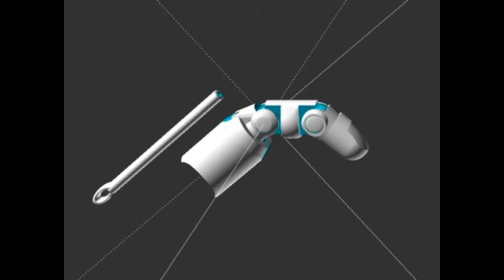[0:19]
Hi everybody, I'm Emily Thompson, and my primary role this semester for our project was to manufacture all of our iterations for the prosthetic finger. Our initial idea was to design and build an above-the-knee prosthesis. However, through additional research and some discussion amongst the group, we decided it was a little too big and expensive for our iterative design and manufacturing process.
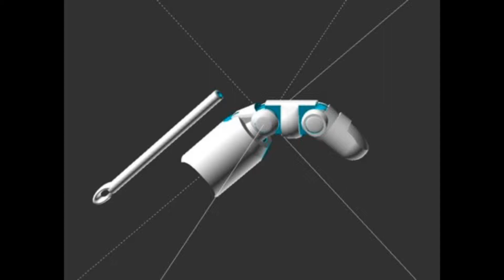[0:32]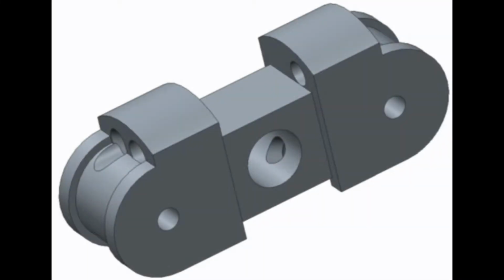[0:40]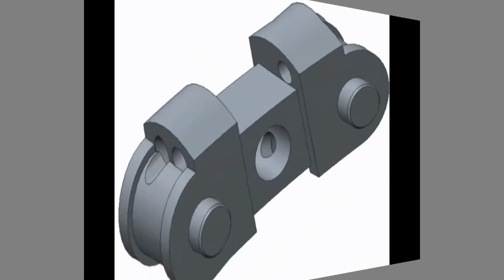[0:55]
So along the same lines, we came up with the idea of doing a prosthetic finger, and we knew that the small size of the finger would allow for ease of that iterative design and manufacturing process I previously discussed. We also knew that this gave us the opportunity for design enhancements to both the finger and the wrist harness. So overall, the purpose of our project is to create a prosthetic finger design with a natural feel that is lightweight, flexible, strong, comfortable, and most of all affordable.
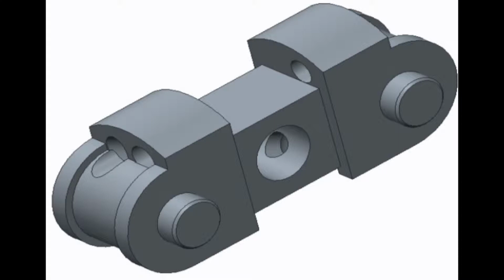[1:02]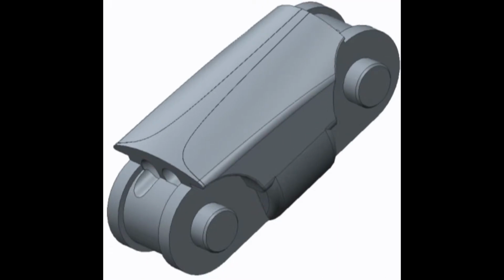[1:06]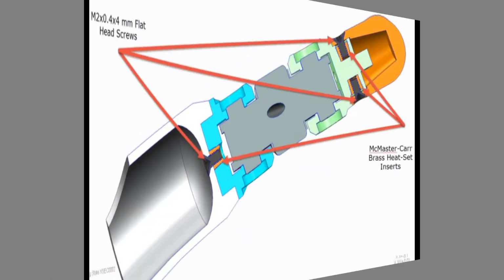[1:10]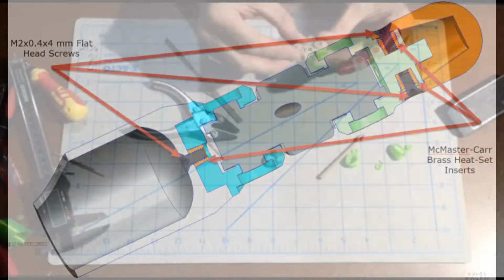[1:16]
And that brings me to the goals of our project. First, we wanted to consolidate the parts. What we found on Thingiverse had a few different STLs that would later be assembled, so we needed to consolidate those to meet our project requirements. We also wanted to reduce the post-processing time. The Thingiverse STLs required some sanding, filing, and drilling, so we wanted to tidy that up.
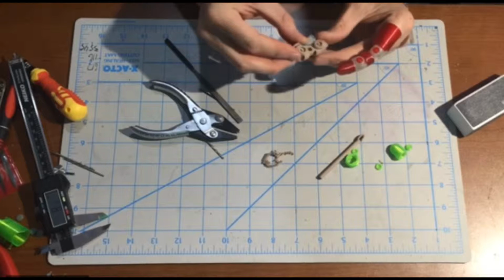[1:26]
We also wanted to create customizable attachments that provide additional functions. And we also wanted to introduce a new harness design that increased leverage and reduced pressure on the hand when going through the natural movements of the finger.
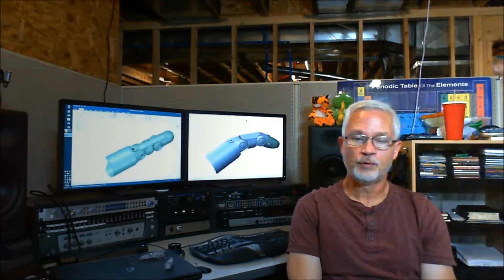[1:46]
Hello, my name is Steve Stumbo. My part in this project was centered around the design process. So we pulled the original idea from Thingiverse and brought it down with its STL files. And as I was playing with these files in a variety of different software packages that were suggested in the class, it became evident very fast that we were dealing with STL files with a huge number of errors.
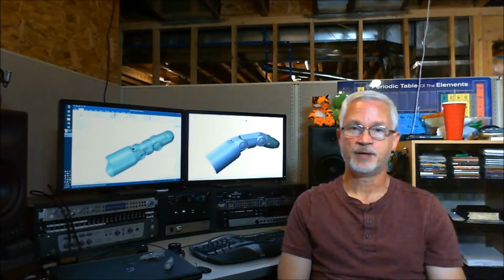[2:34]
I think one of the parts of this assembly had over 300 errors in it, and I was just struggling with trying to figure out these software packages to try to fix these errors. So we made the decision fairly early on that we would go ahead and redesign the whole finger, actually redraw it in Creo. And so as we did that, we came up with our design improvements.
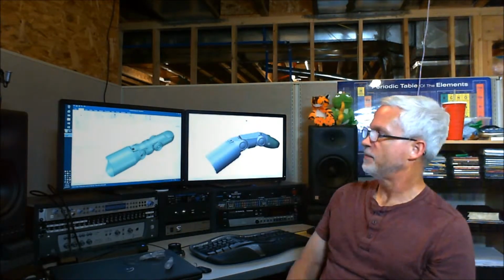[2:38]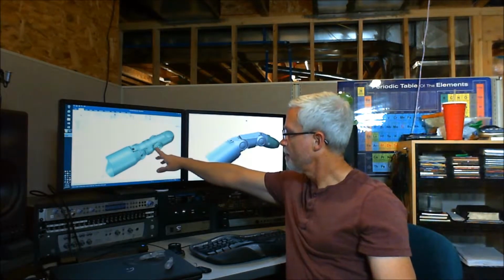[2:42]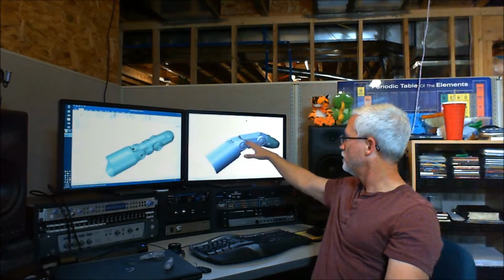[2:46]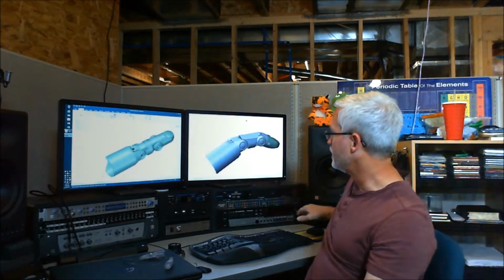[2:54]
It's hard to see from the picture here, but you'll notice that this middle section of the finger is made up of a couple parts. We integrated that all into one piece on this side over here, and we also did some better smoothing and blending in the design to make it look better. Probably the biggest key piece that we did that was different than the original design is
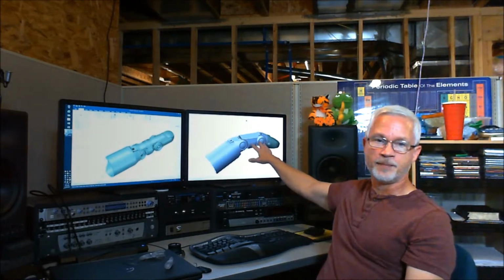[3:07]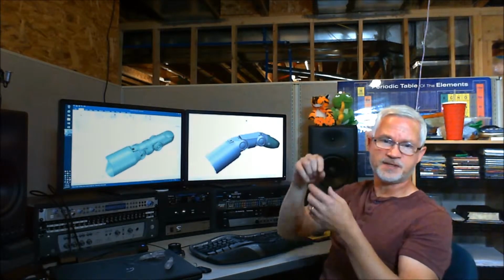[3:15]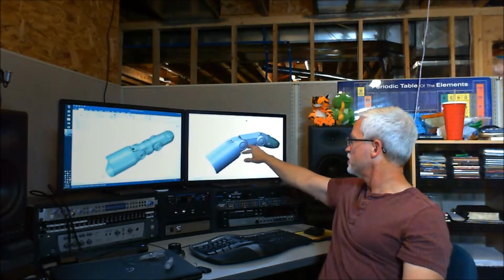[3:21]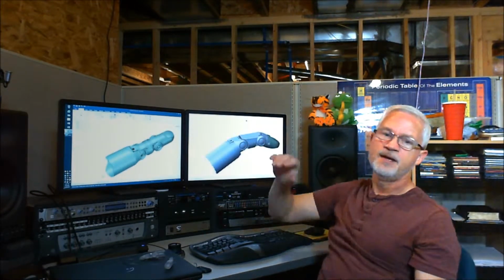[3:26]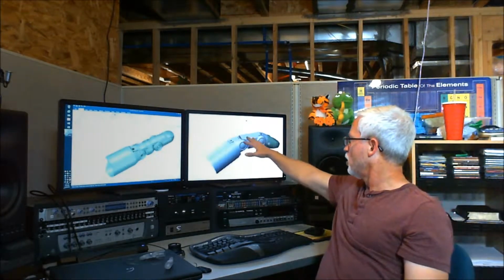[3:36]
in order to meet our articulating finger requirement of 2 joints, we took these 2 specific joints here, and in the original design they used metal pins that were assembled after the fact. And we said, no, we're going to create this main middle section, which is made up of 3 parts here, minus this socket and the finger, and we integrated that all together. So we got our 2 articulating joints out of that that were printed at once, and then we were able to sculpt and combine this middle section part into one single part as well.
So at the end of the day, we reduced the number of parts. It did take significant time to redraw this. I think it was mentioned in class that it's really difficult to take somebody's design that's an STL and back out all the dependencies of how that was made and so on, and that was very true. I basically started from scratch here.
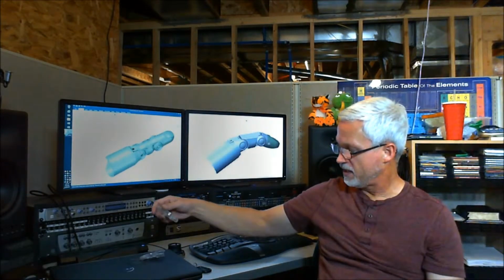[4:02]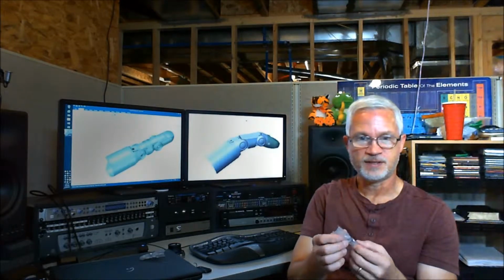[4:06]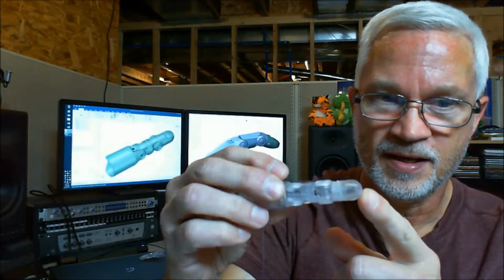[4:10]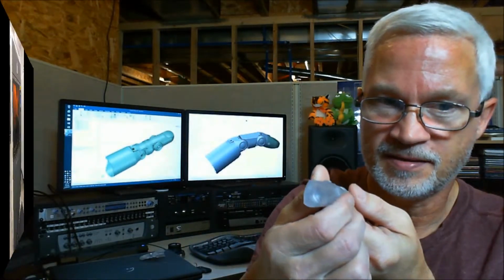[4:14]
The one thing I will say is we did integrate 3 threaded joints in this design, and I'll try to get up here in the camera. You can see in there that those screws show, and then the one in the base is in here as well. All the finger components were printed in the Projet 7000 by 3D Systems, so that encompasses the fingertip, the articulation component, and also the finger socket.
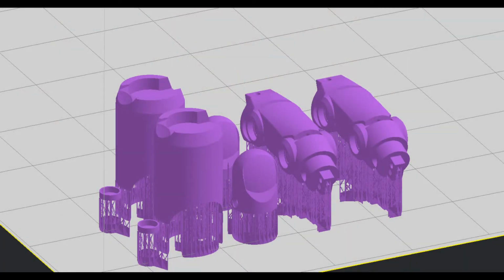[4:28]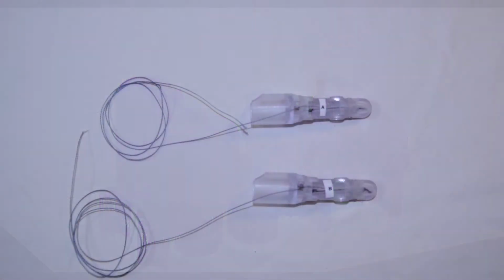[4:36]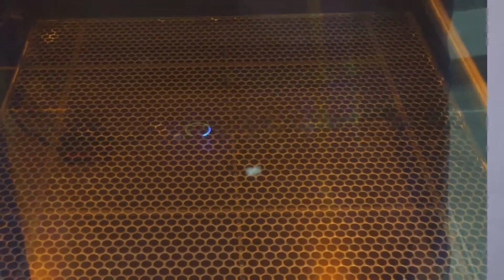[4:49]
This is done with an SLA process and was printed in a plastic material that is clear in color. We thought it would be kind of neat to see the inner workings of how the finger flexes and extends by all of the wires and cords running through and across the knuckles. This Projet 7000 is especially good for use in prototyping. It prints with fine feature detail with accuracy of up to plus or minus 50 microns.
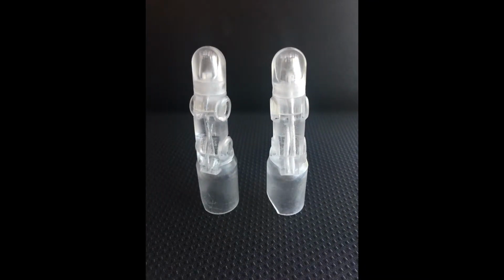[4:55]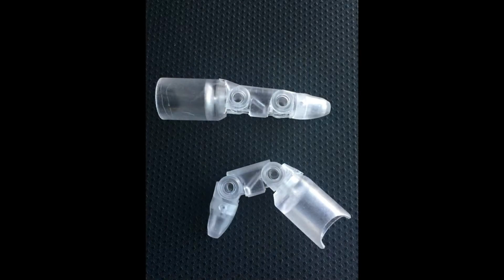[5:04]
We built our finger in 100 micron layer thickness, so that accuracy is about half the layer thickness. Our build duration ended up being about 4 hours and 15 minutes, and this was for our final finger plus a duplicate just in case anything may have happened in transit or in assembly.
My name is Lance Yellowhorse, and I was in charge of the palm harness design for our prosthetic finger.
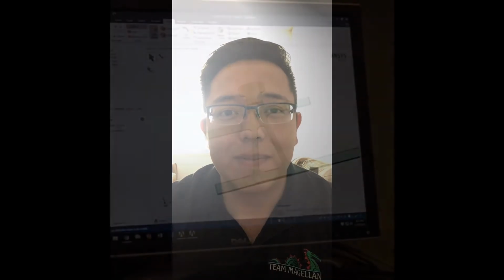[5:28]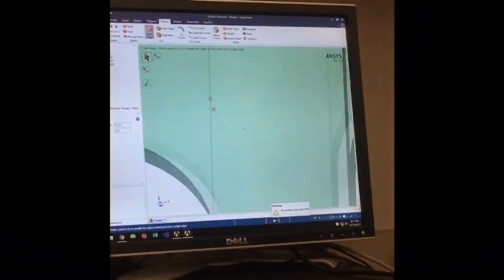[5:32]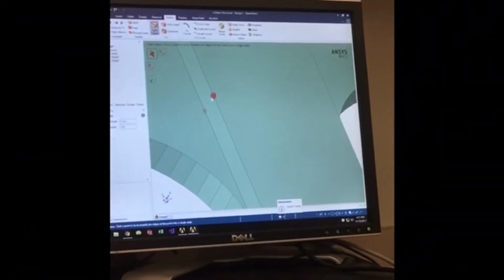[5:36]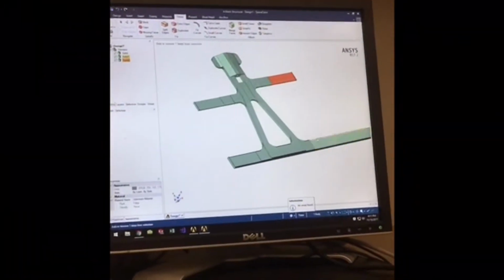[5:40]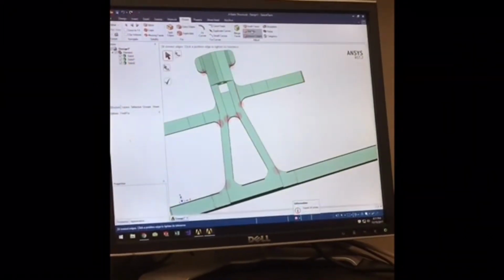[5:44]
Today we're going to talk about the CAD revisions, .stl mesh repairs, the slicing, printing, post-processing, and assembly of our palm harness design. The palm harness was an original .stl file created by Swoozle on Thingiverse. Our goal was to modify the palm harness for comfort, adjustability, strength, as well as support for the articulation of our prosthetic finger. The .stl was originally a mesh file that was converted into a solid body.
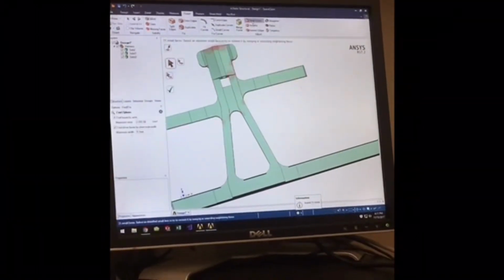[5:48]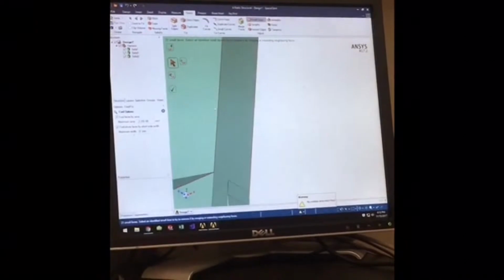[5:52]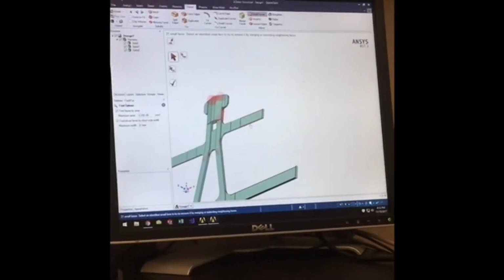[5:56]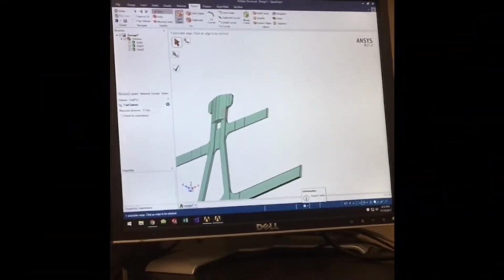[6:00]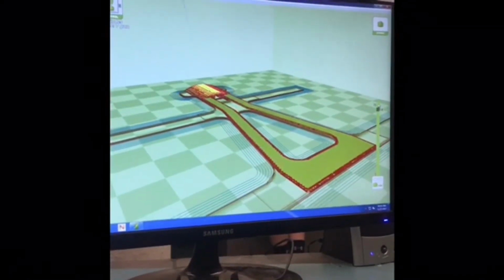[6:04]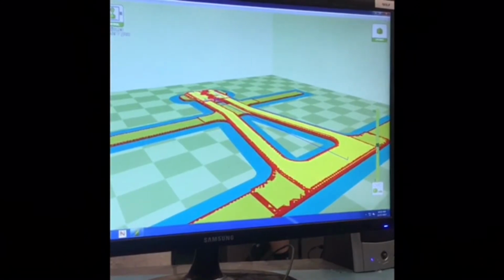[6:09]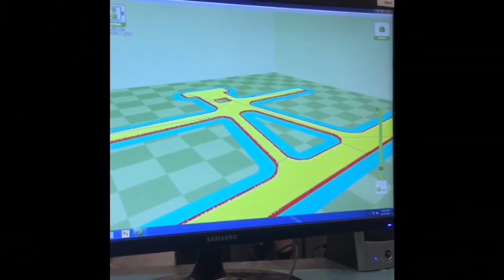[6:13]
70 errors were repaired using ANSYS's SpaceClaim. This video shows errors including split, duplicate, and inexact edges, as well as missing faces. Once the .stl file was free of errors, modifications were made to elongate the straps for strength and adjustability of the buckles. The file was then uploaded into Cura's slicing and printing software, where a brim was applied to assist the bonding potential between the bed and the nozzle, and each layer is examined for quality.
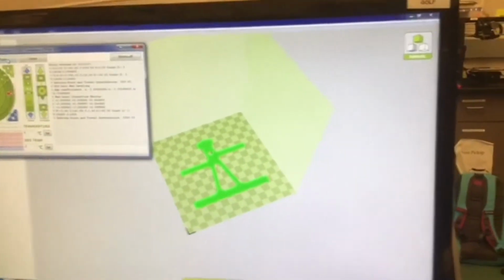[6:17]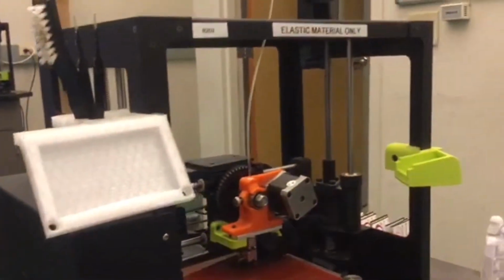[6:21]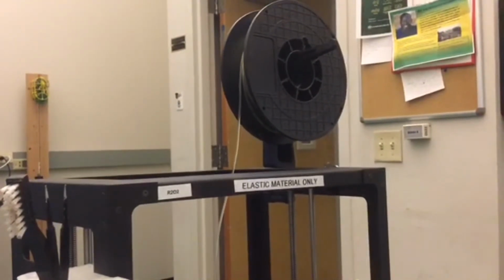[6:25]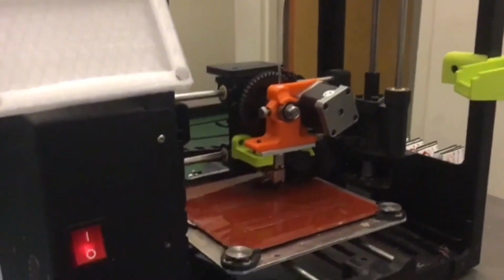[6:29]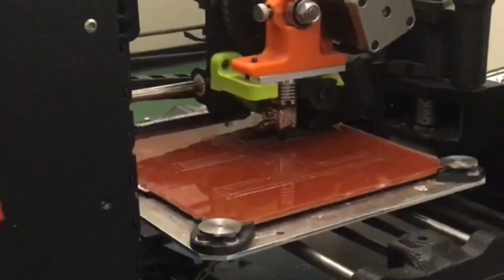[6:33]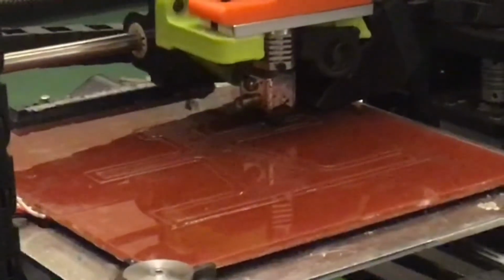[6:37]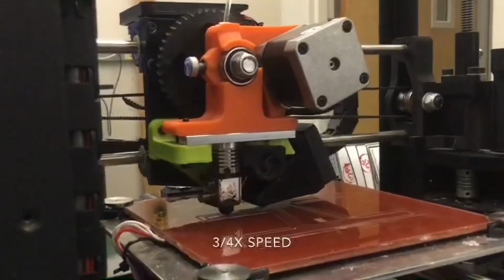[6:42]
Now that the palm harness fits within the build volume, the print is initiated on the Idea to Product Labs R2D2 Flexi extruder, and we can see the NinjaTek SemiFlex TPU flexible filament being fed into the RAM extrusion head. This controls the feed rate, material state, and precise movements relative to the bed. The goal was to accurately maintain the size and shapes of the rods, maintain convection and conduction, as well as monitor the position and control of the printer.
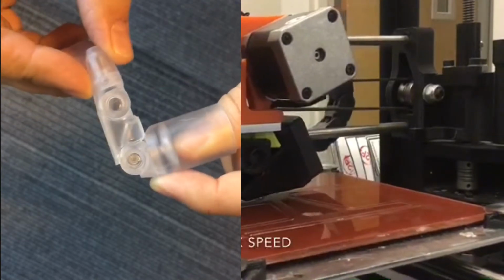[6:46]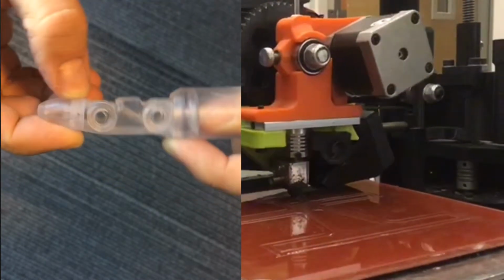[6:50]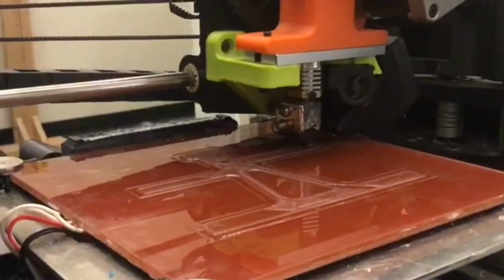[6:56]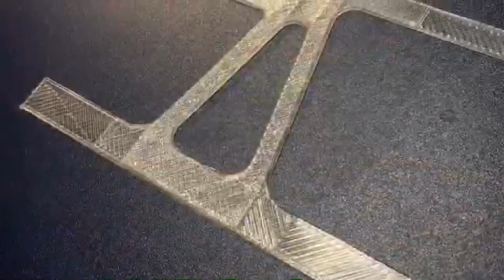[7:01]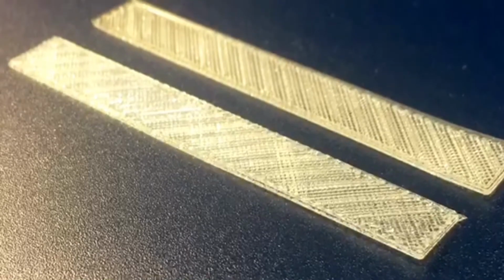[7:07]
We chose this printer due to the reduced cost, 20% infill providing structural rigidity, and flexible material capabilities, soft feel, and ability to withstand high tensile strengths. The palm harness is designed for the right hand and can be modeled for the left hand as well. The video shows a square opening where the anchor block will be applied. I will talk about this part shortly. These images show the final part quality of the palm harness, and the same process was repeated for the wrist straps as well as the palm straps.
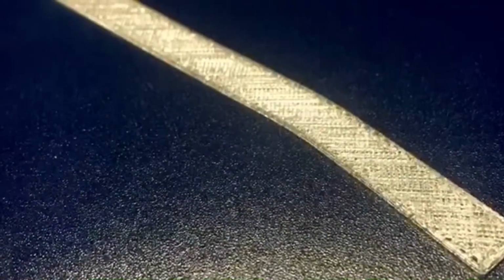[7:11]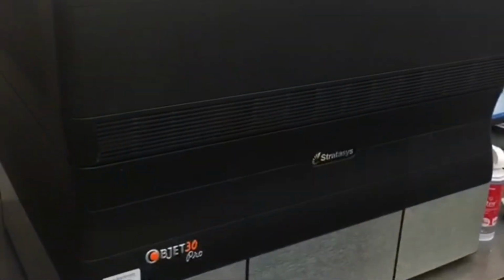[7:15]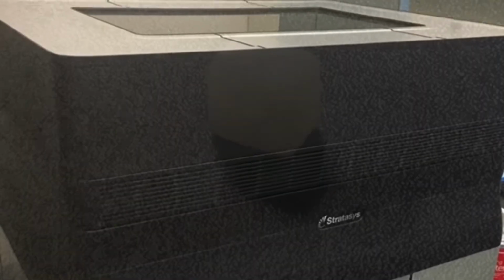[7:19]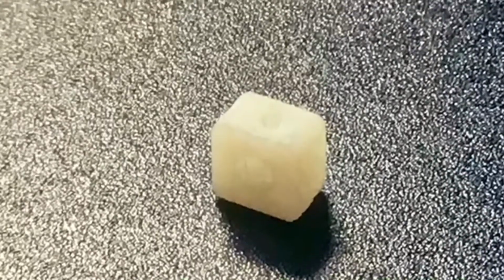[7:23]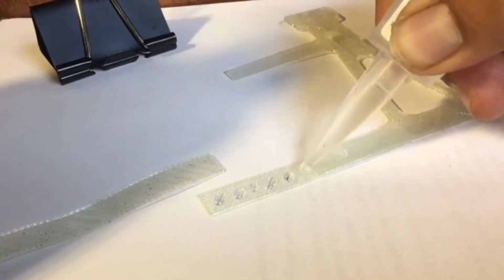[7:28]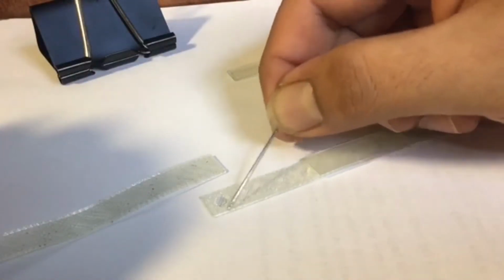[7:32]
The anchor block was created using the Idea to Product Labs Stratasys Inkjet Objet30 Pro using RGD450 and simulated polypropylene, giving us a tough, small, precise anchor block that will anchor our tendons. For assembly, a design change was utilized using Loctite superglue to bond the straps together in place of soldering, which will create a weaker joint.
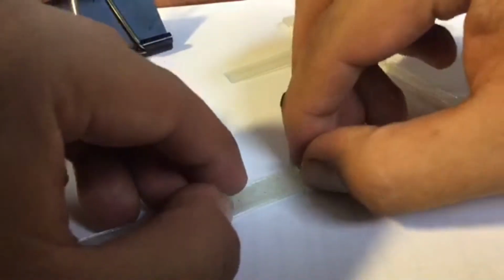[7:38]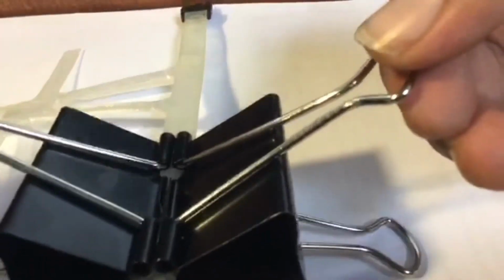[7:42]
The straps were designed to have rods facing rods to increase surface area, adhesiveness, and visual presentation. The straps were fit into position and clamped during the curing settings. This same technique was repeated for the buckles. This is how our palm harness was designed.
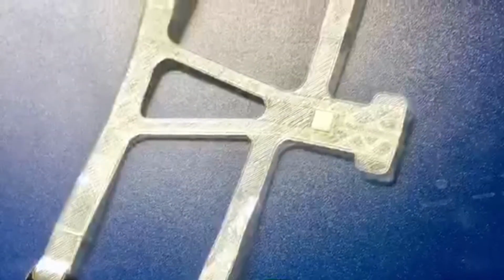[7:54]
Hi, my name is Justin Felix, and my portion of the additive manufacturing project this semester involved creating the final visual presentation for our project. I'm actually located on the west coast, about 1,200 miles away from the rest of the team, so unfortunately it made it impossible for me to participate in the physical build.
So instead I'm going to discuss a few lessons learned from the team as well as how team dynamics played into this project. One of the biggest lessons learned, or really reinforced, is that even in additive manufacturing, the process of getting from idea to final product is very much an iterative process. As we previously discussed, we made multiple adjustments to the middle portion of the design to create a better blended and functional product whilst reducing the number of parts printed.
One thing we discussed multiple times in class was systematically engineering a part to reduce the number of times that a product would need to be printed before finally getting a part that fit the fit, form, and function desired. Thankfully, we were able to accomplish this in just 2 prints, even with a team that's relatively new to additive manufacturing. I think we also learned a good deal about how to plan for the strengths and weaknesses of each type of printer and designating parts to be printed or manufactured on printers appropriate for the needs of that design.
For example, the fingers required a higher degree of accuracy to ensure that the parts were able to actuate with a tight tolerance, but were not completely adhered together. We actually ran into this issue in our first print, as the spacing was too small and the rods glued together, making the fingers unable to be used. So for this reason, we printed the finger portion on the ProJet 7000, whereas the harness that required a little bit less precision could be printed on the R2D2 without 100% infill.
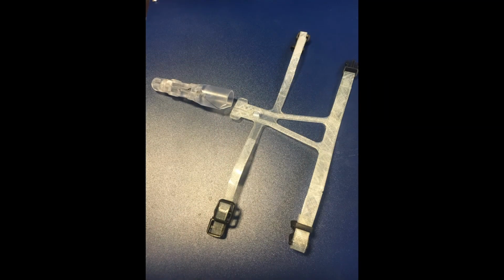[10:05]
Finally, the team had an additional hurdle to clear, being that all students were online, so any products that we wanted to collaborate on, we had to upload or email to each other, and response times from the team varied vastly depending on what other work each team member had to do outside of the project. I think this created an interesting dynamic in that we got to experience what a company may have to overcome if not all portions of a product are sourced, designed, and manufactured in one location.
So our team had to overcome distance, time zone differences, and the fact that team members are employed outside of this project as well.